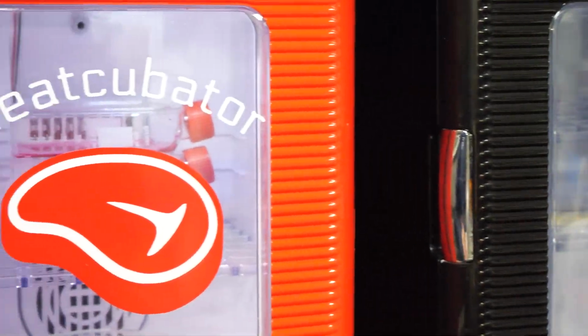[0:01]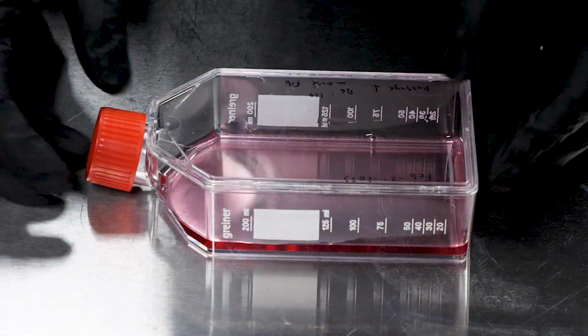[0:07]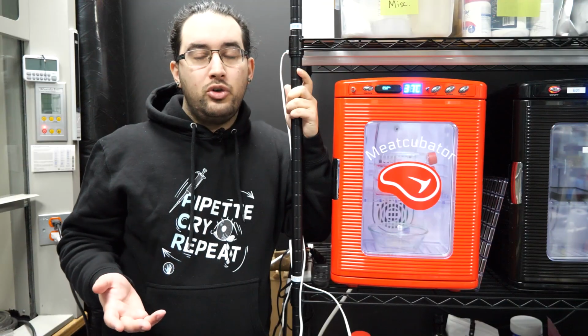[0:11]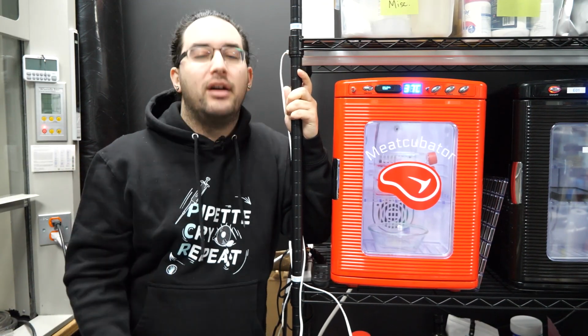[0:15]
This is my new meatcubator, and it can grow living flesh. As a test, today we're going to be growing some mouse meat, but I'm getting ahead of myself. Let's start by answering what I assume are your most obvious questions. First, why? Followed by, who on earth would want such a thing?
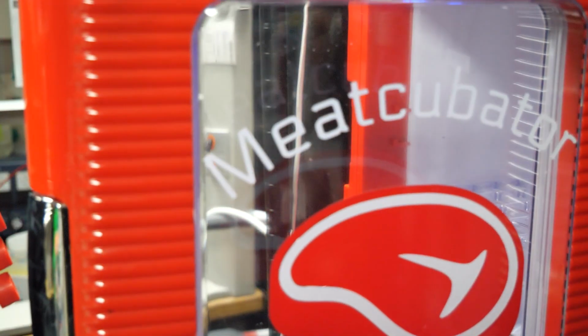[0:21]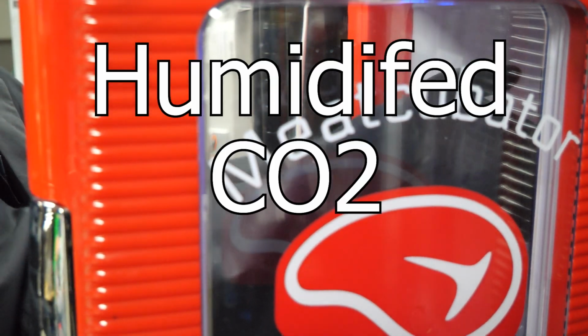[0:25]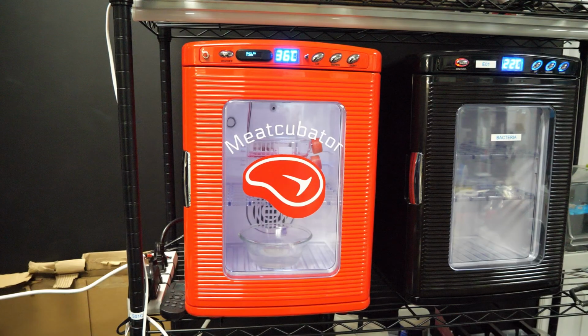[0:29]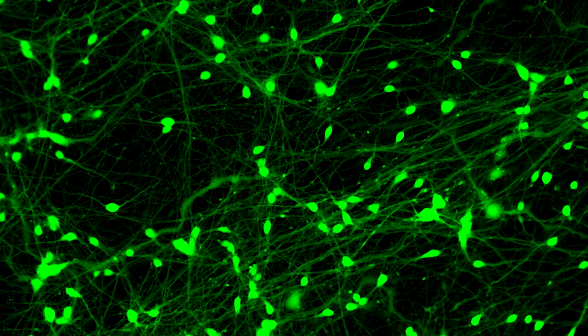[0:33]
Why is pretty simple. While we've given it an absurd name, the proper name for this is a humidified CO2 incubator, and it's used to grow most types of mammalian cells. Hence, meatcubator. And why I want it is because I've got some mammalian cells that need growing, and this is the only way to do it.
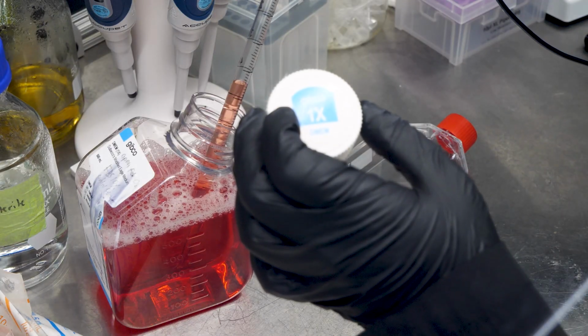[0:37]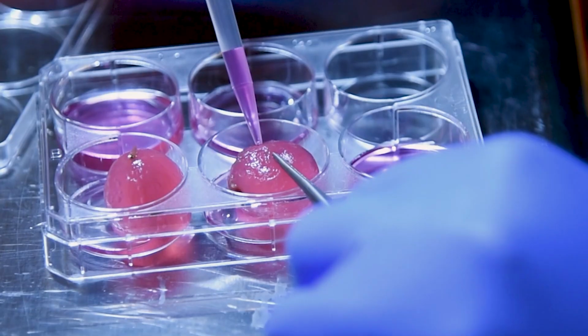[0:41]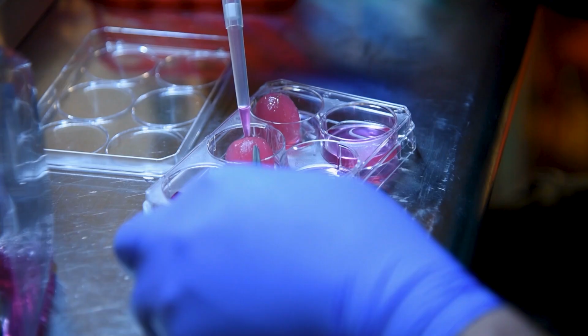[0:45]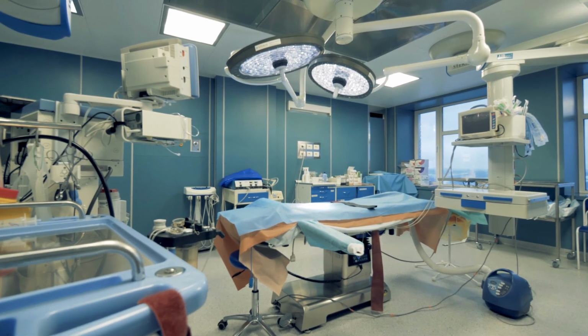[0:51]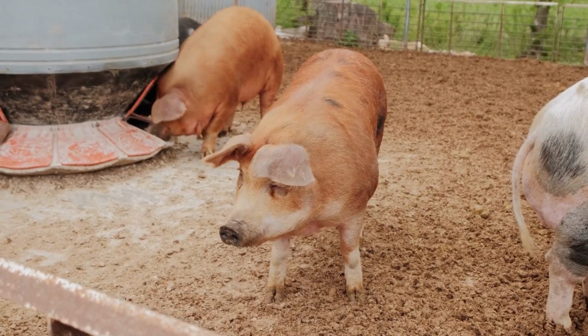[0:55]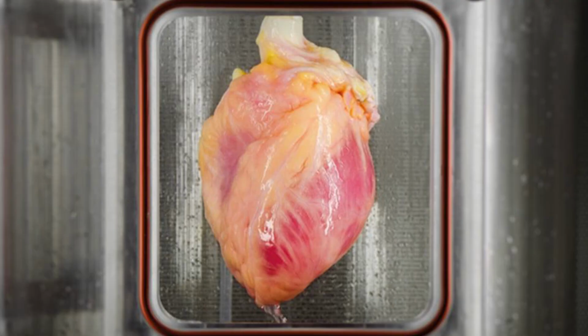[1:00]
This is not the first time we've talked about growing mammalian cells on this channel. A few years ago, you saw me make these meat berries by removing all the plant cells from a grape and replacing them with monkey cells as a way to demonstrate the cutting edge of regenerative medicine. The same technique is being used in hospitals to grow new organs for patients by removing the cells from pig organs and replacing them with patient cells so they have a perfect donor match.
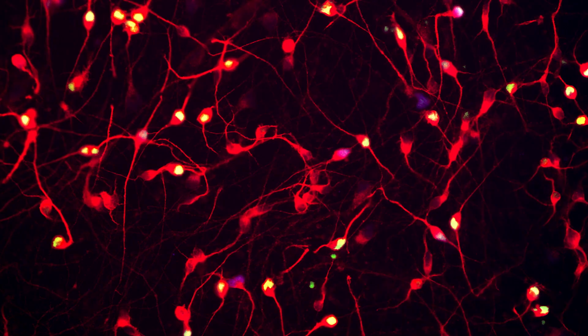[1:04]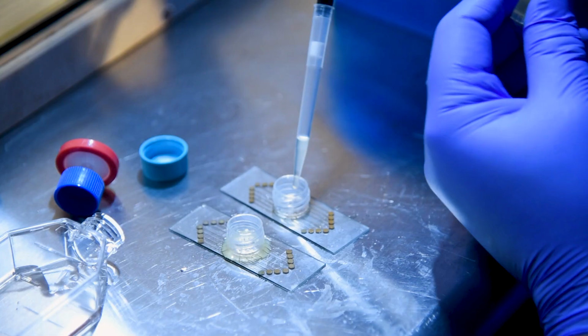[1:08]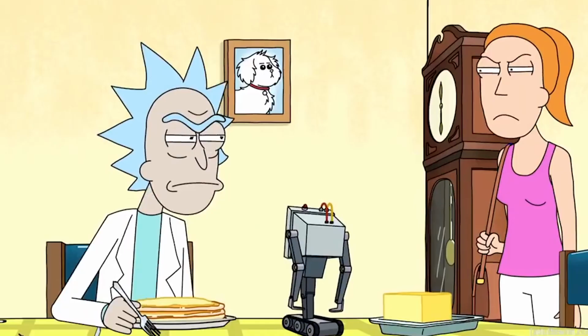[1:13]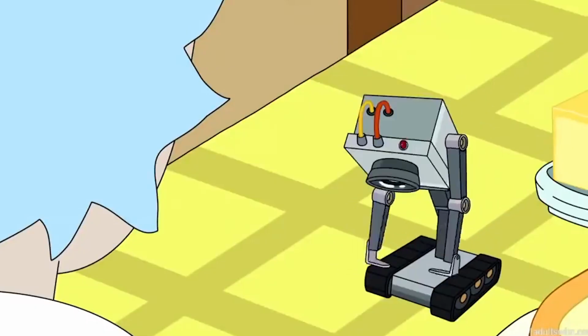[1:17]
Another project that is ongoing is the Neuron Project, where we want to grow human neurons in a special homemade electrode array and connect them up to a computer. Personally, I want to see if we can make them pass some butter, but there's a long way to go before then. What is my purpose? You pass butter. Oh my god.
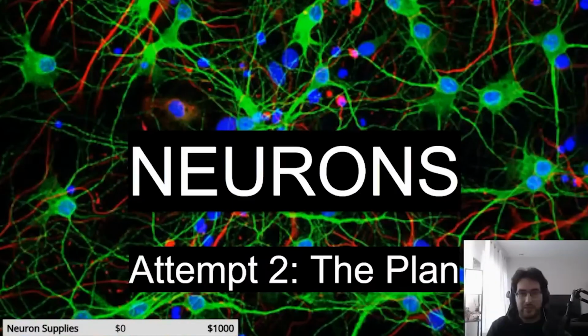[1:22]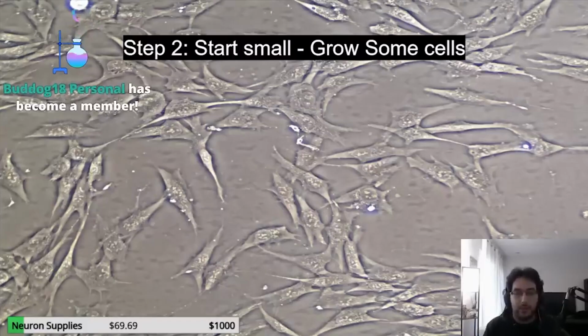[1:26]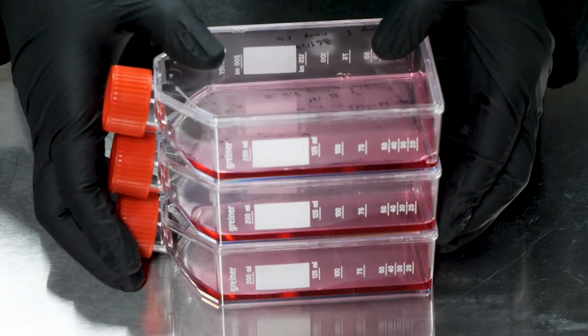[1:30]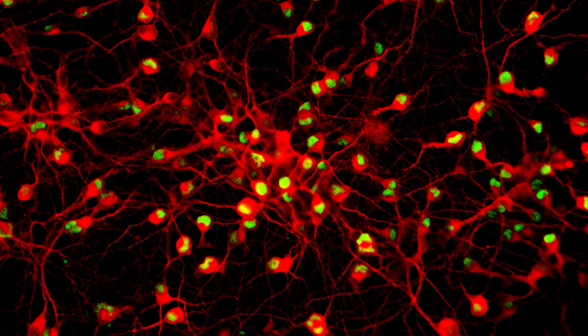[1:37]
If you saw the stream I did about the Neuron Project, you'll know that I have a new plan that breaks the project up into easier pieces, and building this incubator is step one, and growing fibroblasts to prove that it works is step two. That's the mouse meat I mentioned earlier. From there, it's just a matter of switching out the growth media, and we can try growing some neurons again, and even modifying them to be individually colored and rainbowy.
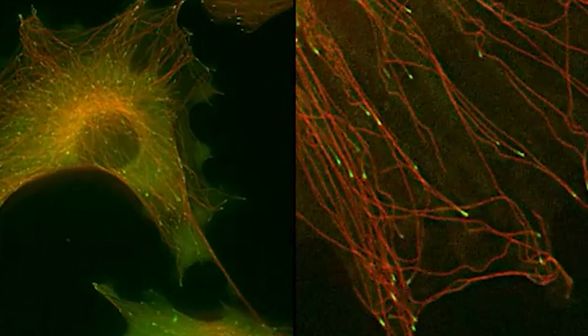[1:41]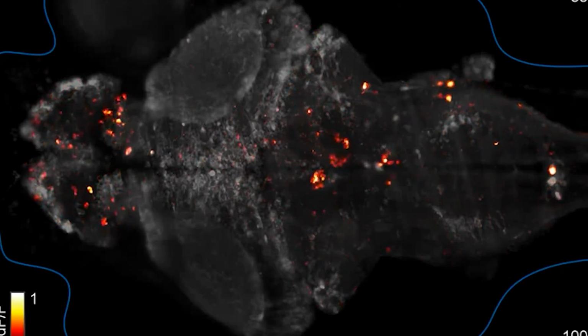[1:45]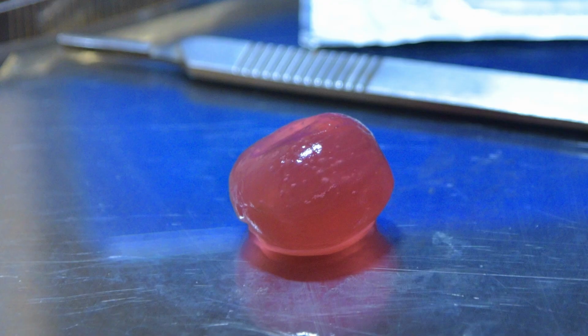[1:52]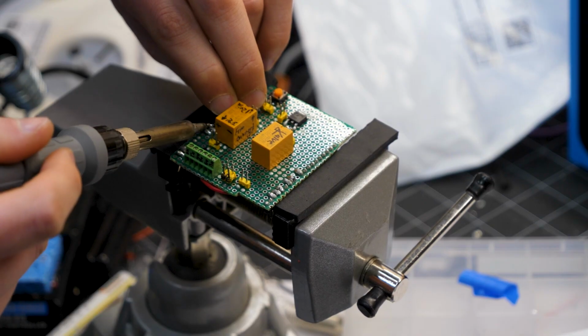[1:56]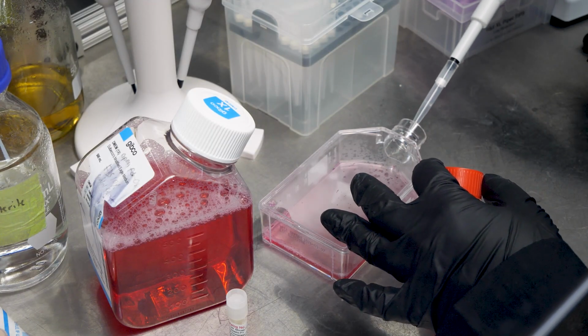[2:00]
Beyond that, there are so many amazing things you can do with mammalian cells, and now I'll be able to show off some truly cutting-edge genetic engineering, and also make some unspeakable horrors beyond comprehension as well. If you thought the meat berry was weird, wait till you see what we're gonna do with a slice of bread. So today we're gonna go over how we built this, how it works, and then give it a test drive with some cells to prove it works.
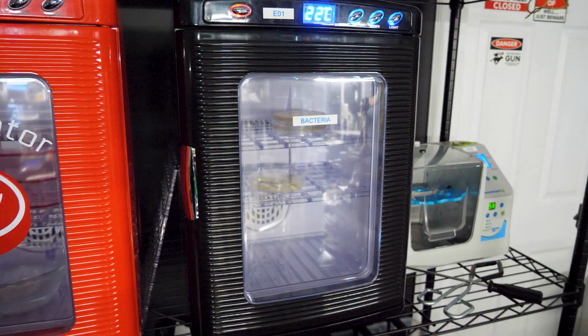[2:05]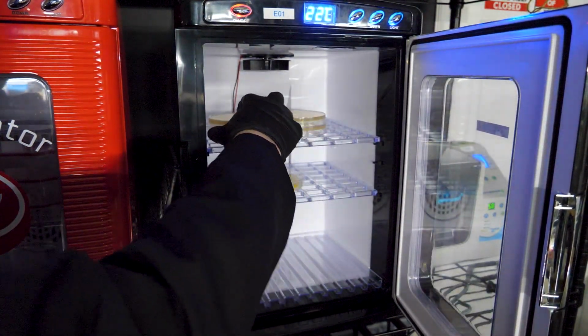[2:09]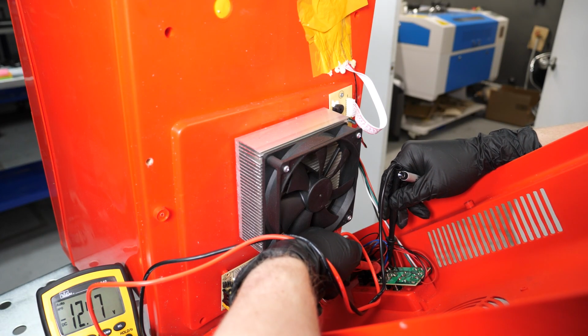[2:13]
Starting off, we bought a commercially available reptile egg incubator. I love these things, as they're a cheap and effective solution, and I already use one for my bacteria and yeast projects. This way, the heating aspect of the incubator is taken care of, and all we need to do is control the CO2 input. Doing so is really straightforward.
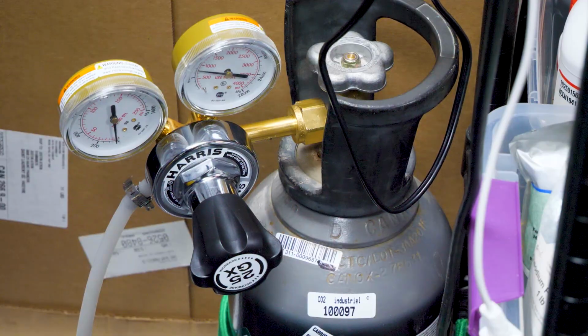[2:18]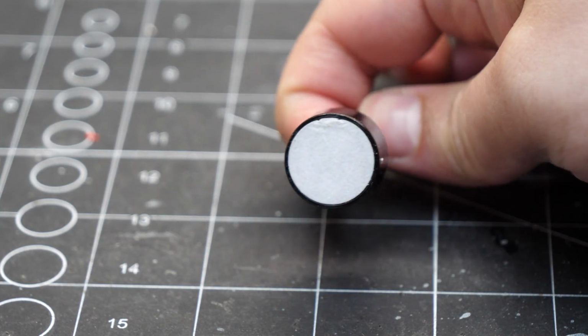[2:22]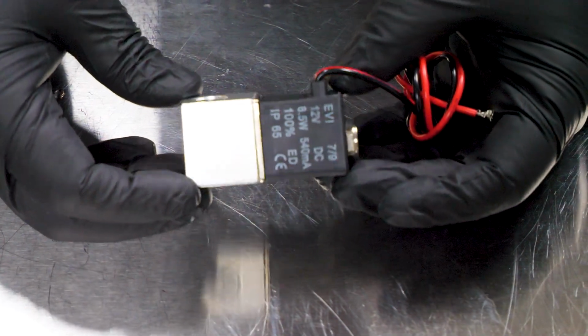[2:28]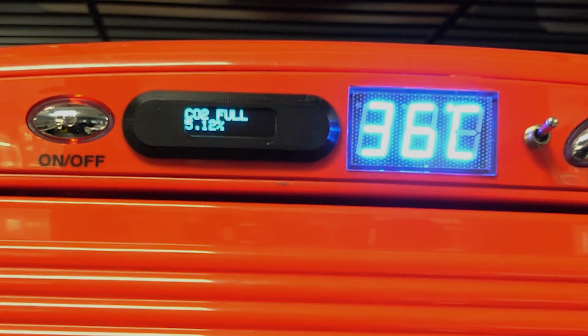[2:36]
To control the flow of CO2 from a normal gas tank, the system first uses an infrared CO2 sensor to detect the level of CO2, and an Arduino is used to read that sensor and then control a solenoid valve to send puffs of CO2 into the incubator. It does this on a cycle and slowly raises the CO2 level to about 5%, which is what's needed for mammalian cells. We also included a little switch on the door that'll turn the CO2 system off if it isn't closed properly, so we're not slowly filling the entire room with CO2.
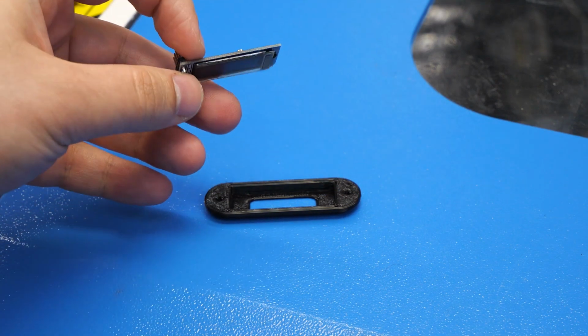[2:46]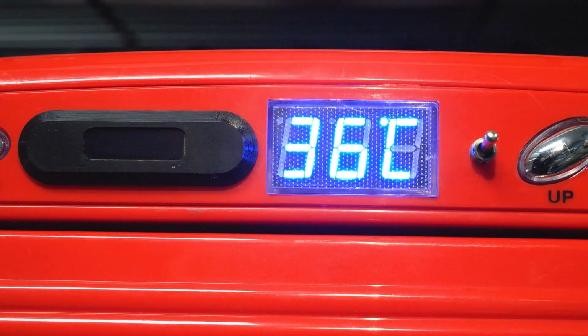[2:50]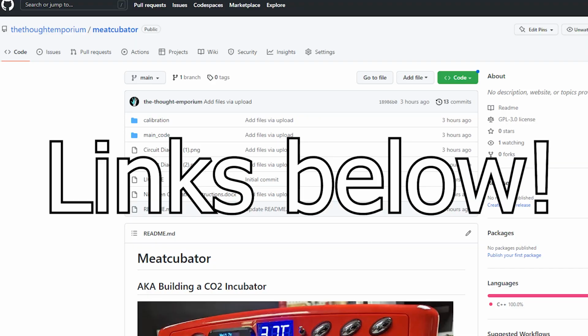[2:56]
In order to see what the system is doing, we also added a little LCD screen. And finally, there's a little switch to turn this part of the system on or off in case we want to grow cells in media that doesn't require CO2. For those that want to follow along, there's a link in the description to our GitHub where you can find schematics and code for the whole project.
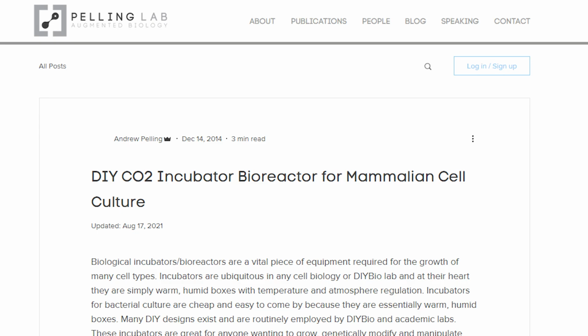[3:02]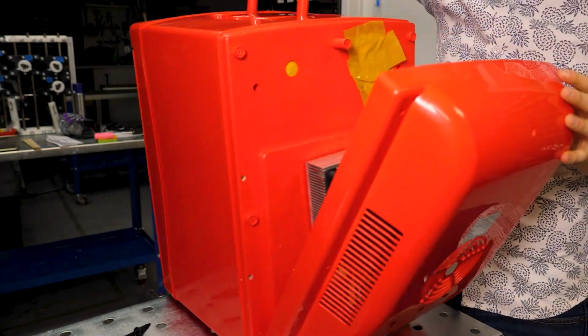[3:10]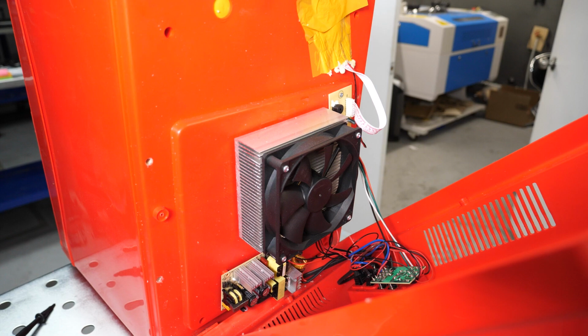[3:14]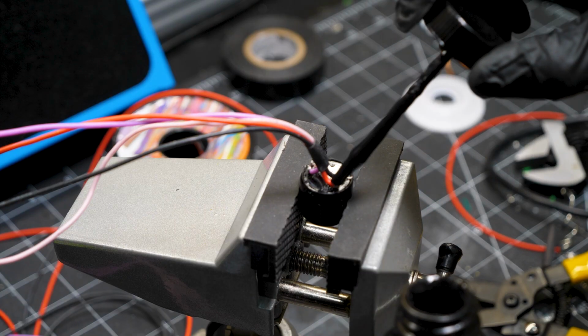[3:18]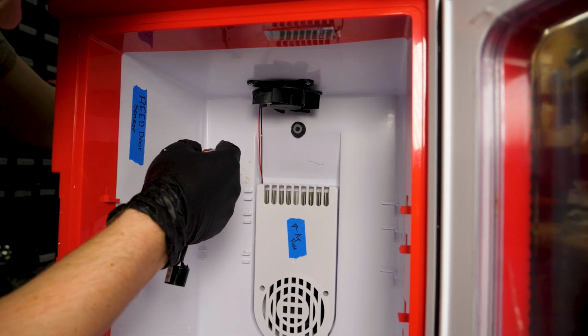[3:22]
We based our design on this tutorial from Andrew Pelling at the University of Ottawa, but had to make a few changes since their code was out of date and we used a few different components. To actually assemble all this, we started by taking the back off the incubator and were pleased to find that there's a lot of room in there to fit all the different components. After attaching some long wires to the sensor, we drilled out a hole to the main chamber for it to fit, and then ran wires through to the back.
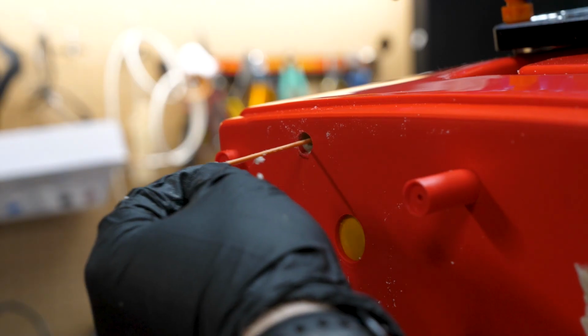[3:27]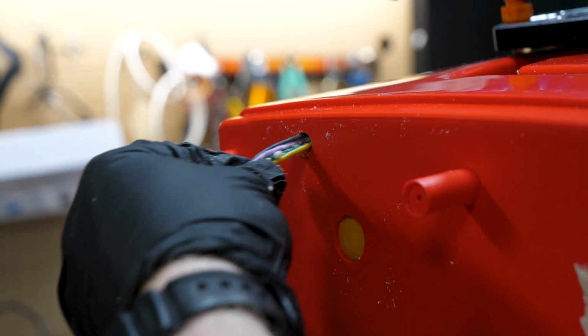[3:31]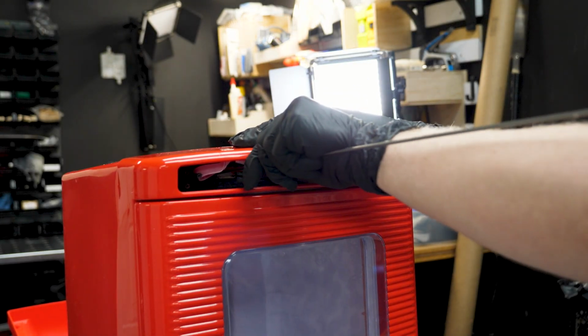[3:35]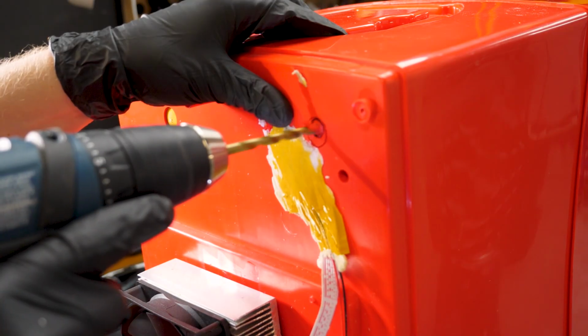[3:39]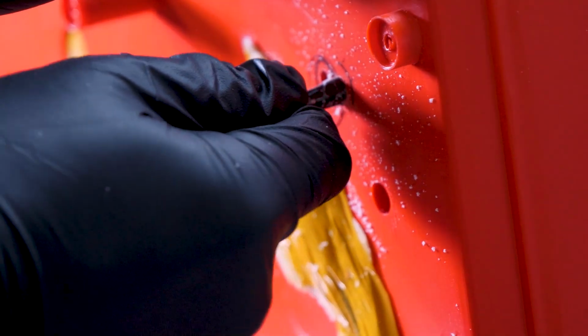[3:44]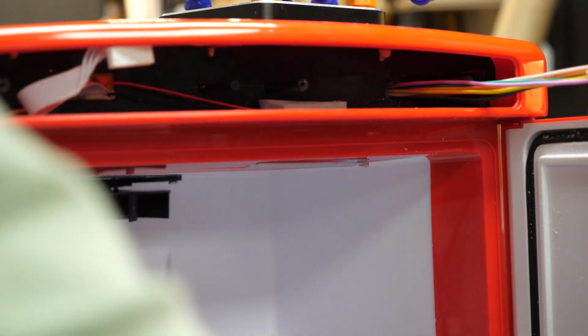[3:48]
We also drilled a hole for the CO2 inlet tube. Since the incubator is insulated with a lot of spray foam, when we needed to run wires from the front to the back, we could just drill a small hole on one side, then drive a metal rod through the foam to the back. We then located the rod using a magnet and drilled a second hole for it to come out of. We taped some string to the rod so that after it was pushed all the way through, we had an attachment point for wires so they could be pulled through as well later.
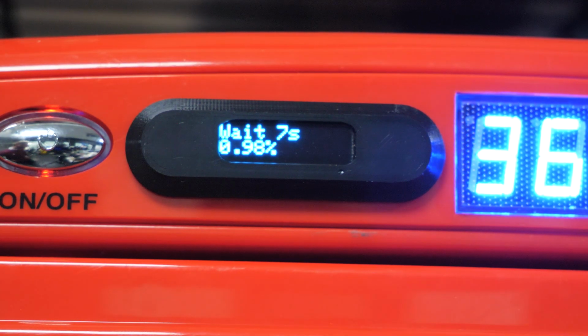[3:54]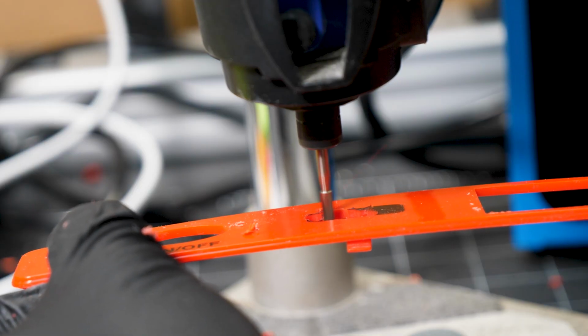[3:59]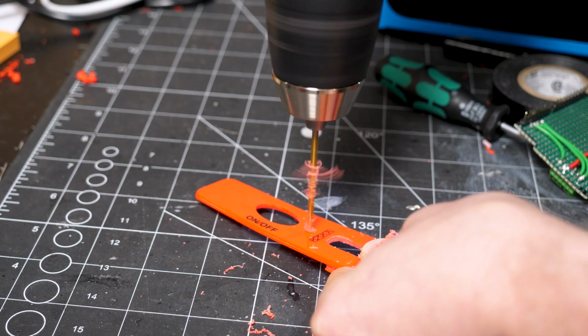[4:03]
We ended up pulling two bundles of wires through. One big one for all the different switches and LCD, and then one set for the door detection switch. To fit the LCD onto the front cover, we popped the front panel cover off and then used a Dremel to mill a slot. We also drilled a hole for the power switch.
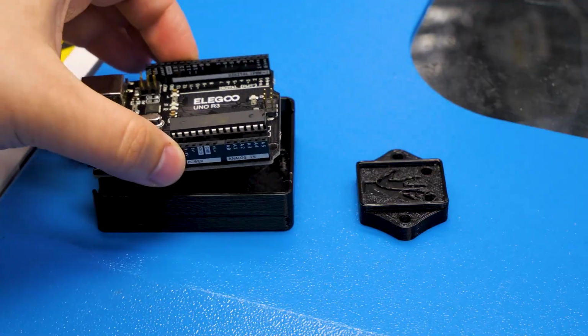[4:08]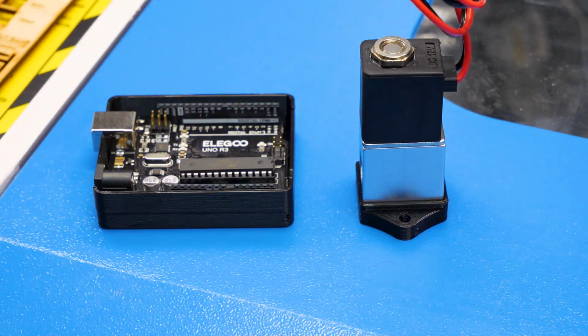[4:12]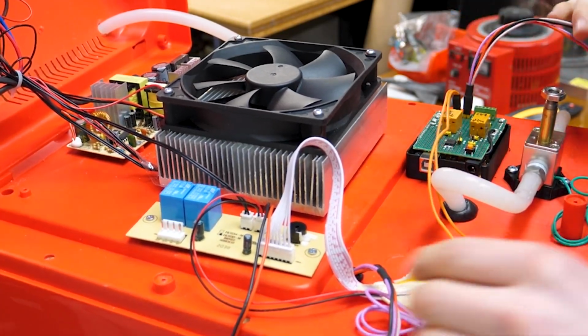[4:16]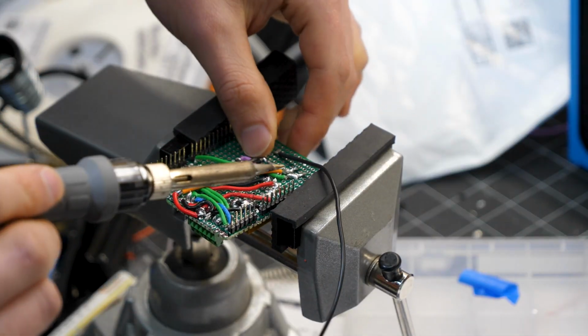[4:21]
For the Arduino, and also for the solenoid, we 3D printed a custom box and a custom mount to make it easy to mount them to the back cavity using just a couple screws. With the main electronics mounted and wires run, things could just be plugged in, and the tubing connected. In terms of electronics, we had to make a custom shield to fit on the Arduino with all the different bits and bobs. The schematic, of course, is in the description.
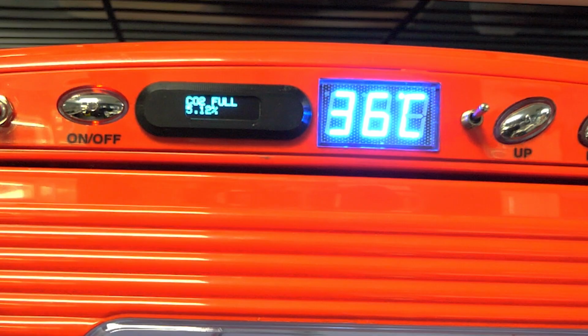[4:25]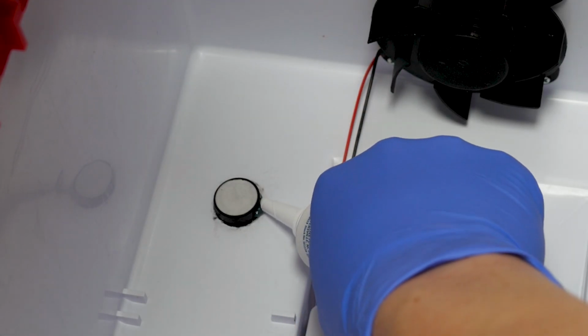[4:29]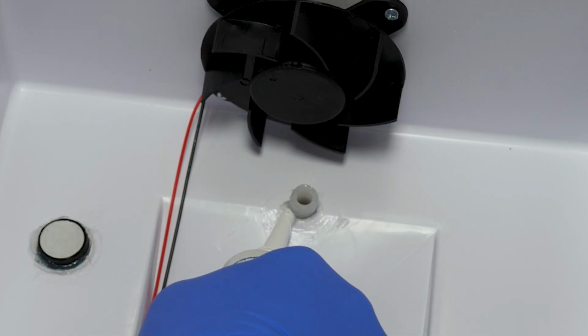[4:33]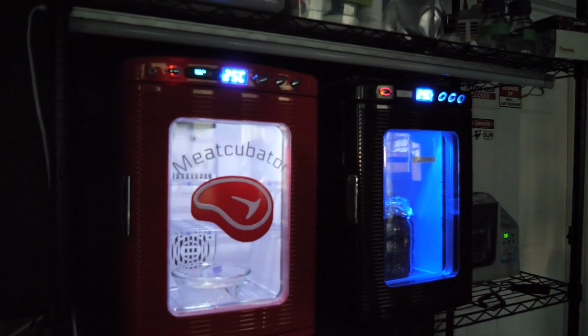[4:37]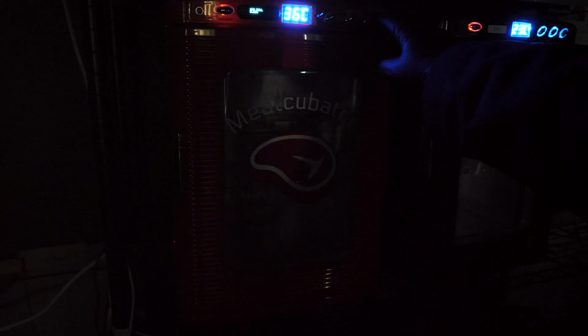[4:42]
Since the point of the incubator is to maintain a specific CO2 concentration, we want to minimize leaks, both so we aren't wasting CO2 and so normal air can't get in. So anything that was in the main chamber of the incubator was sealed in with marine silicone. The only other thing we changed was the color of the light that's built into the incubator by default. Normally it's blue, but we subbed it out for some white LEDs.
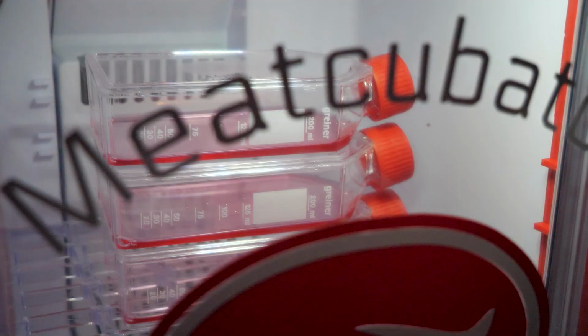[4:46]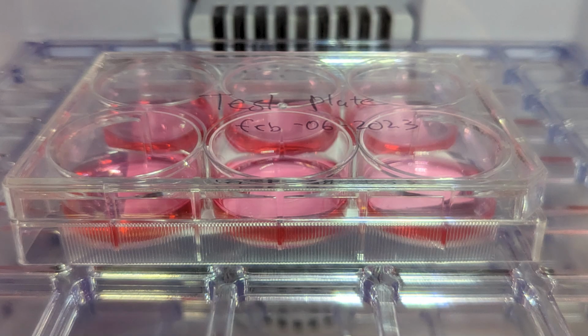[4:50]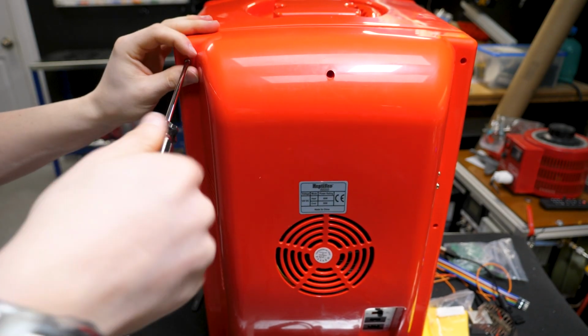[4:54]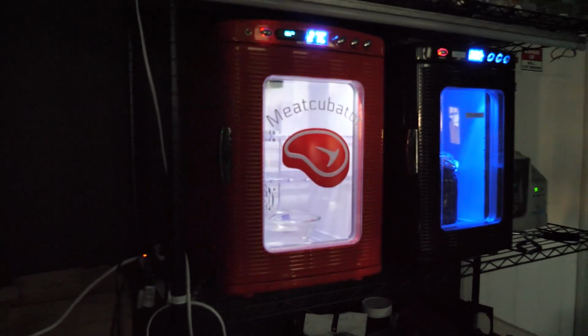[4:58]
Since most mammalian media has a color indicator in it so you can see if there's a problem at a glance, it's really important to be able to see that color accurately. But with that, the whole thing can be closed up, and all that's needed was a nice vinyl decal to make it complete. Alright, enough messing around.
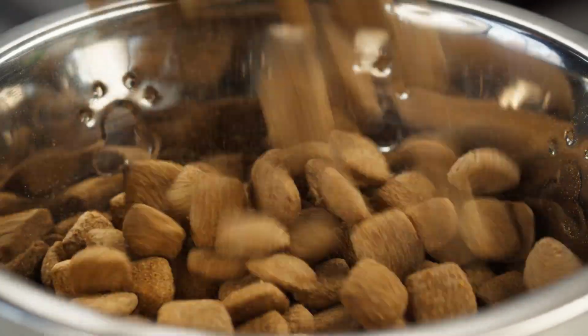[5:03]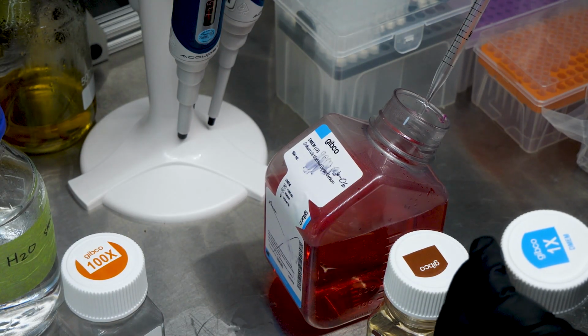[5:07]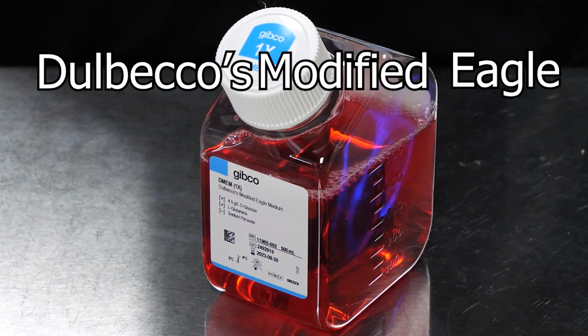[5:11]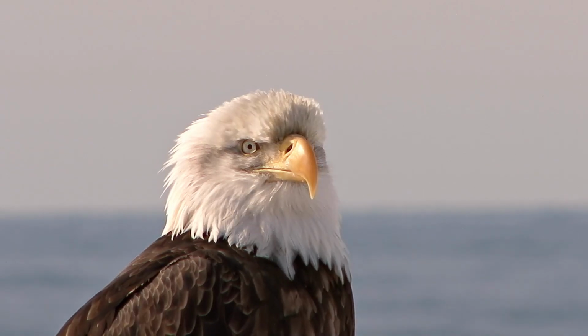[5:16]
It's mouse meat time. Like pretty much anything you want to grow, mouse cells need food, and that comes in the form of a special culture media. The media we're going to be using is called DMEM, or Dulbecco's Modified Eagle Medium, which, as I've said before, disappointingly doesn't contain eagles. But it does contain almost everything else that a growing cell needs.
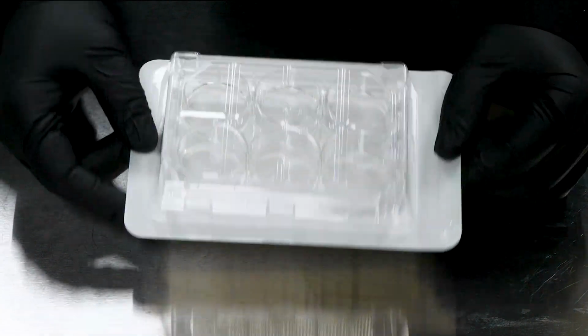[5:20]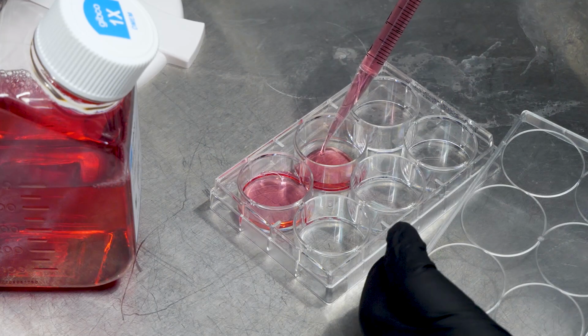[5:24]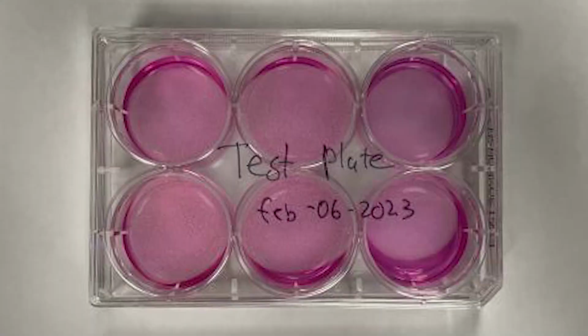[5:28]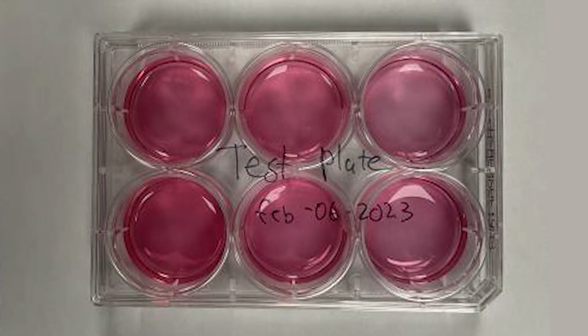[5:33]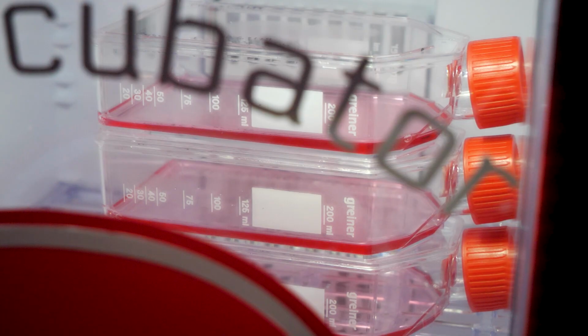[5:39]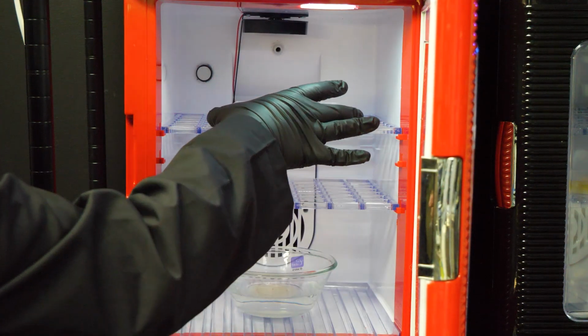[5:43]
As a quick test of the incubator, just to make sure that everything's working, we loaded some plain DMEM into a 6-well plate, and then stuck that in the incubator and let it come up to 5%. Here's what the plate looks like before it goes in, and here it is after it's been in the incubator for a while. The color change is kind of subtle, but it is distinct, and as someone that's done a lot of mammalian culture, you learn to recognize this beautiful red-orange color as the color of happy media. So the incubator is working properly. Now for the real deal.
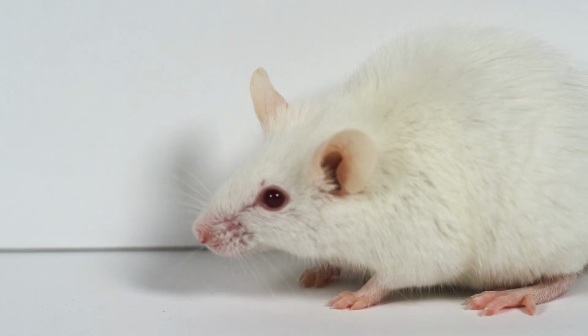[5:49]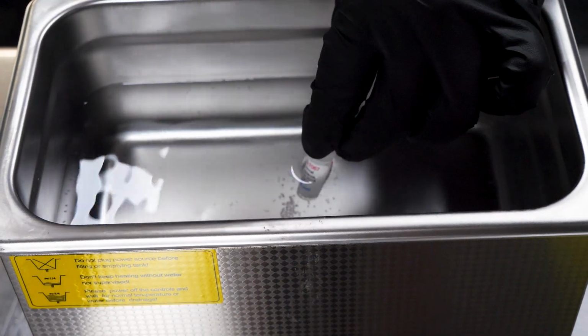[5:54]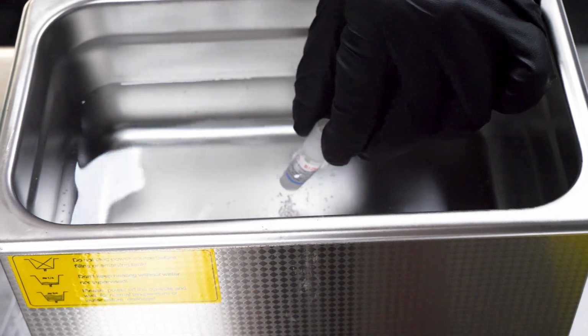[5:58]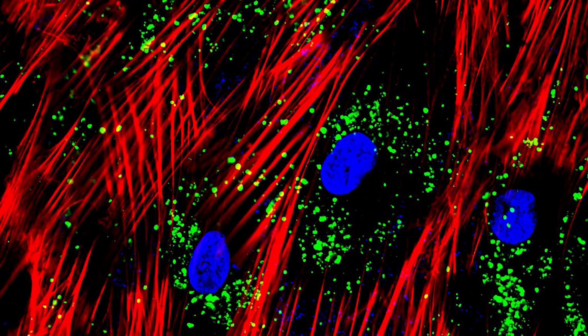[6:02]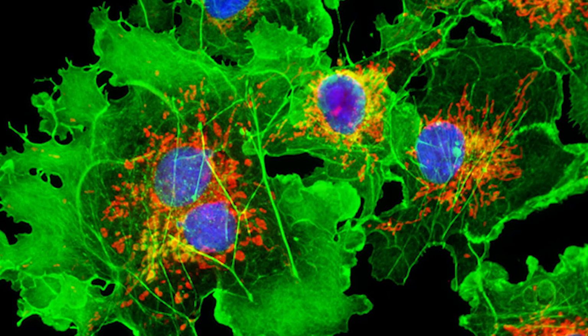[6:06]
The cells we'll be growing are a primary cell line derived from adult mouse skin, specifically fibroblasts. We chose these because they grow rapidly, are non-human and unlikely to contain any pathogens, and don't require anything particularly weird or expensive to grow. They're also very easy to genetically modify, so are a great platform for testing various genetic constructs. Also, as cell lines go, they're pretty cheap because of how easy they are to grow and maintain.
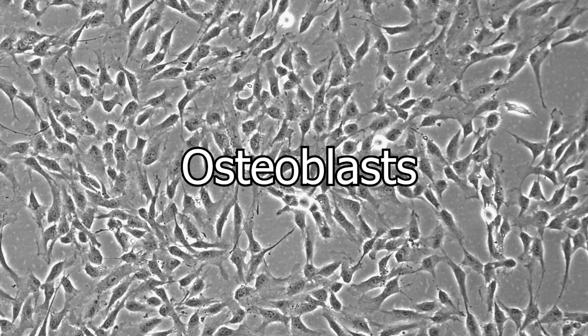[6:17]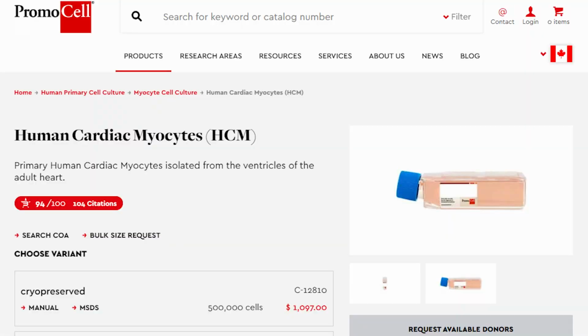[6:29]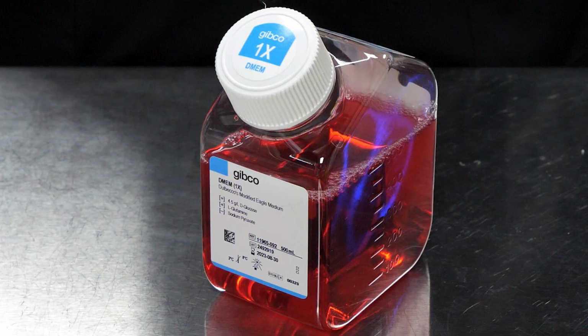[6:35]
Something weirder, like, say, hepatocytes from a liver or osteoblasts from bones, often require very expensive media because they need lots of extra growth factors to grow properly. So it drives the price up both because of the initial cell line and the media to grow them. The human cardiac muscle cells that I'm going to be growing in a future video are nearly double the price, just as an example. As a growth medium, plain DMEM isn't actually quite enough, and so there's a few other things we're going to need to add to it for the fibroblast to be happy.
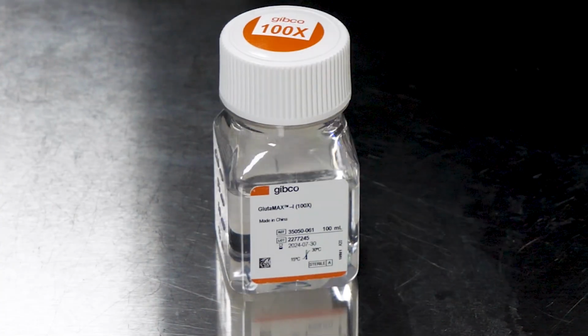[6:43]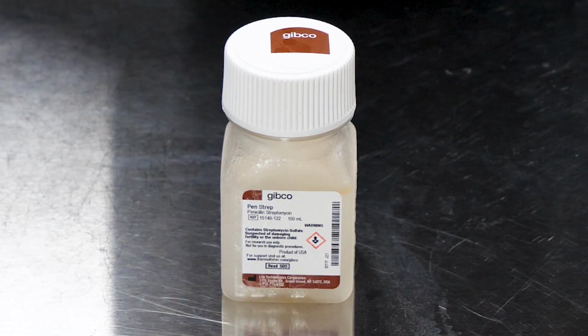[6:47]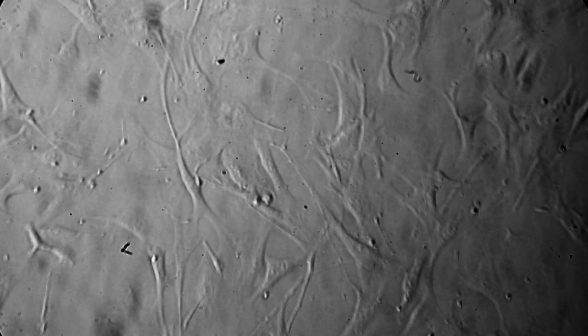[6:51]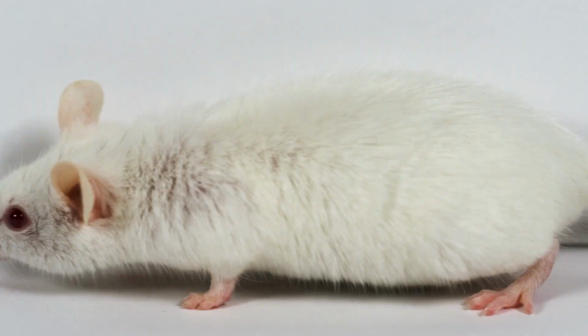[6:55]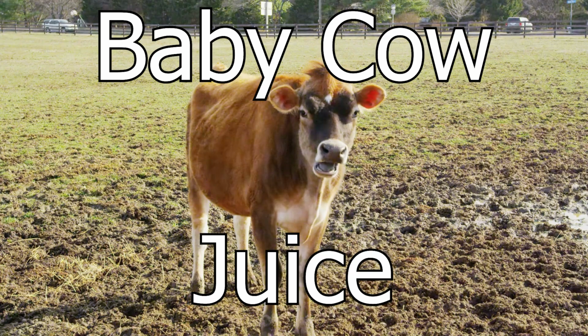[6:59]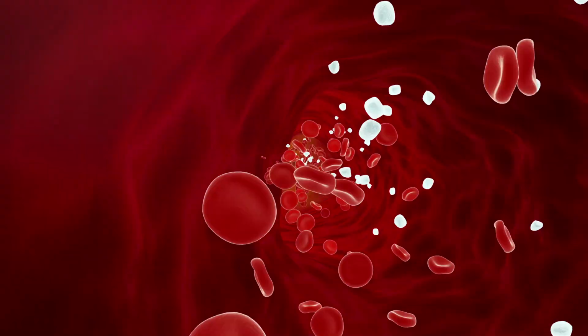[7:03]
First is a supplement called Glutamax. Then we need some pen strep, which is a mix of antibiotics to help make sure the culture stays clean, since pure fibroblasts don't have an immune system to fight off bacteria the way, say, a whole mouse does. Finally, we need some fetal bovine serum, or as I like to call it, baby cow juice, since it contains dozens of growth factors that trick the cells into thinking they're still inside an animal, and so will grow readily.
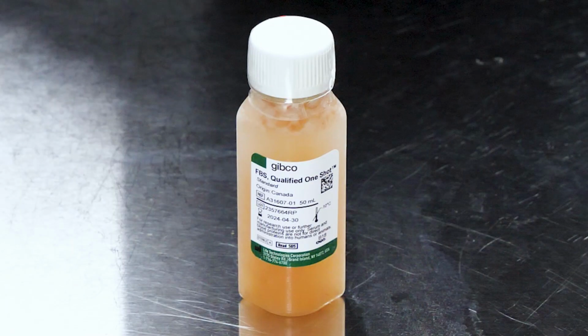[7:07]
I don't love using this stuff for, I feel like, obvious reasons, so in the future, now that we have this working, we'll be able to explore some less cruel alternatives. But for now, fetal bovine serum is the industry standard, so it's what we're going to use.
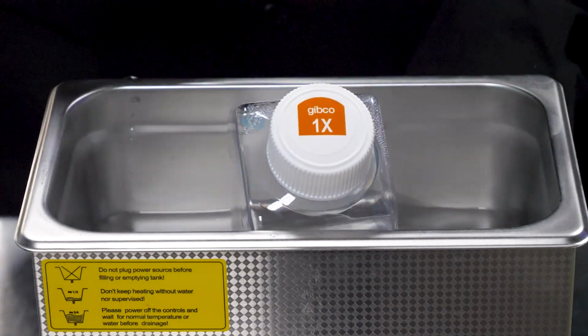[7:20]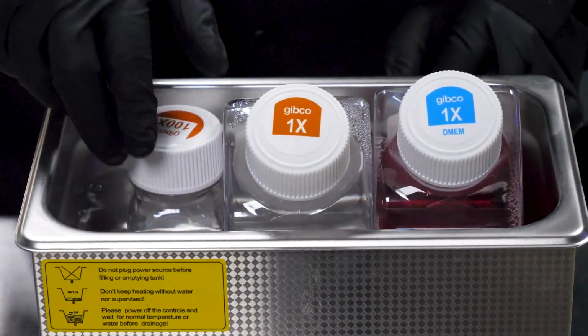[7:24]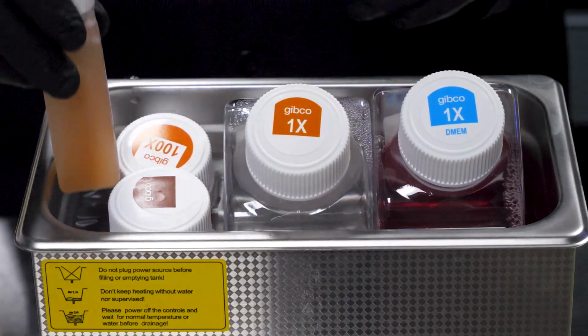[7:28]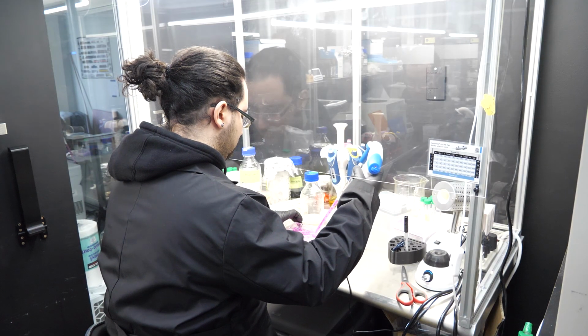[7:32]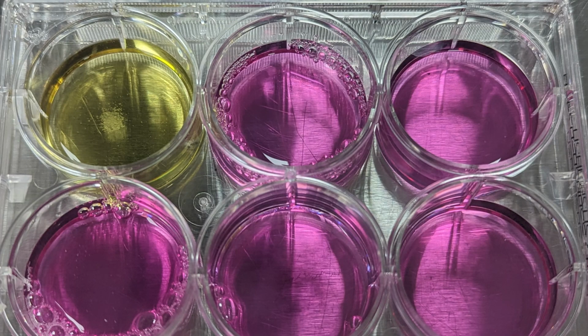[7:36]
Before any of these can be used, they need to first be thawed and then warmed to 37 degrees Celsius. So we set up a hot water bath and let everything melt and warm up. While that's warming up, we can prep our workspace. I'll be working in my laminar flow hood today to make sure that everything we do is super sterile, as any contamination will ruin the culture.
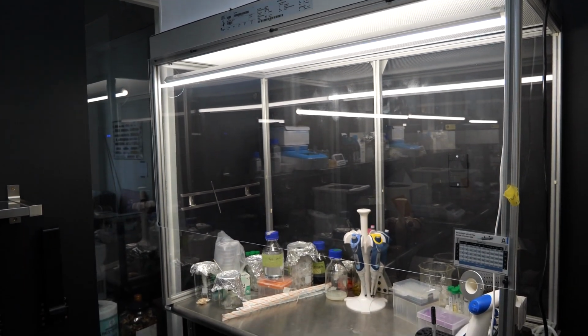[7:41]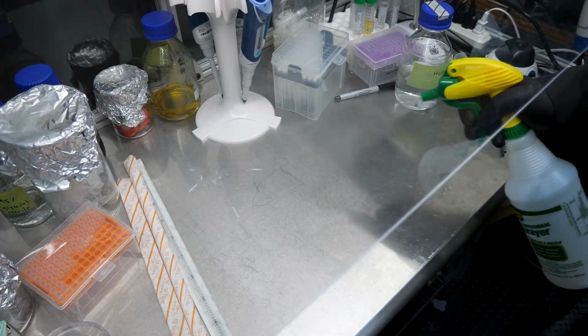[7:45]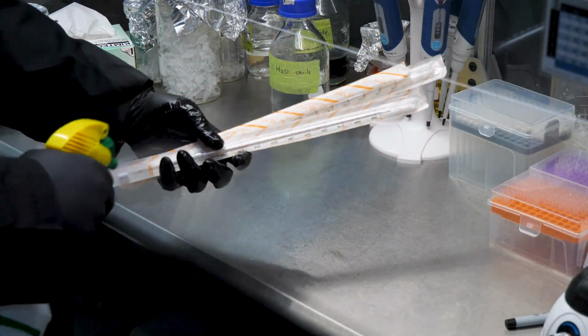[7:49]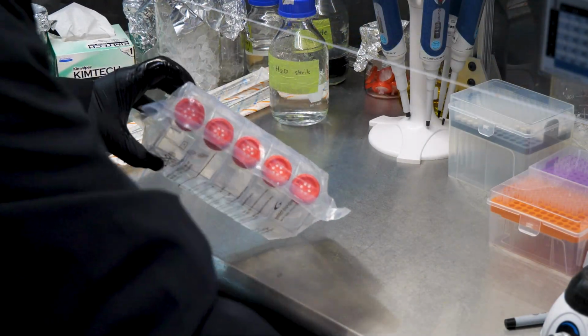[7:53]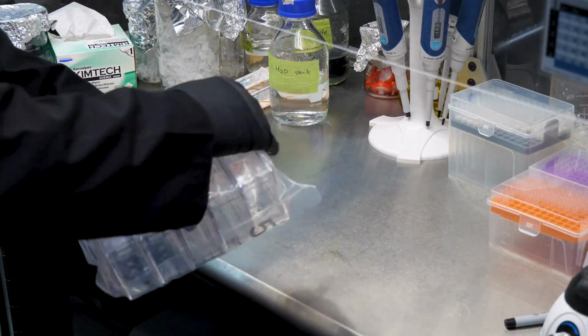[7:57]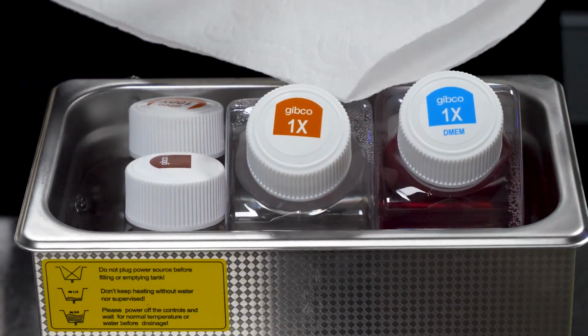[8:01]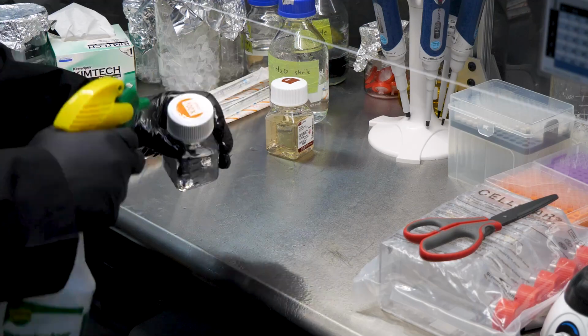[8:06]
It blows super clean air over the workspace so we can work without concern of stuff falling into the various bottles. First, everything gets sprayed down with alcohol, and then I load in some serological pipettes, spraying them down right before I do so. Then I load in a box of flasks, which we'll be using for the culture, again, spraying them down first. You're gonna see a bit of a pattern here. Everything is always sprayed down before it's loaded in. With that done and the bottles thawed, I carefully dried the various bottles off with paper towels off camera and then loaded them into the hood.
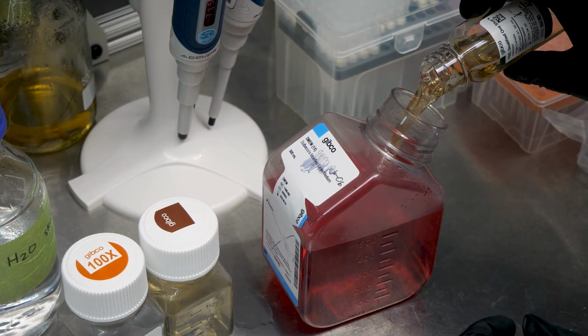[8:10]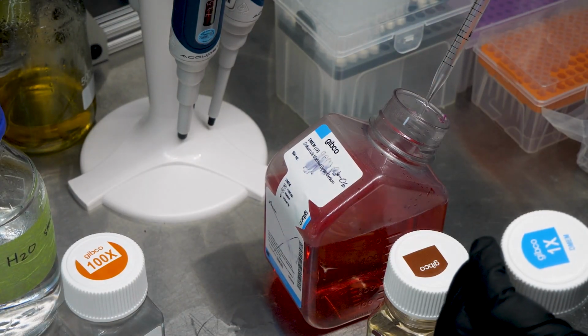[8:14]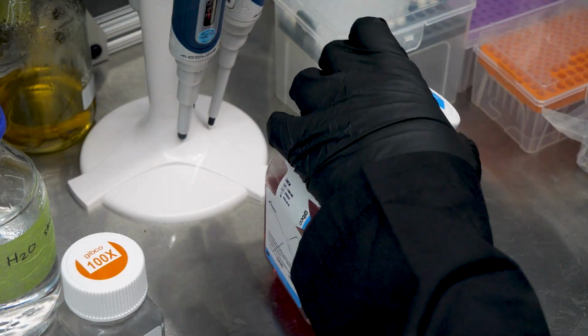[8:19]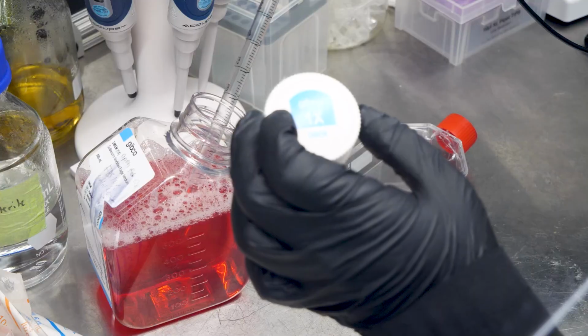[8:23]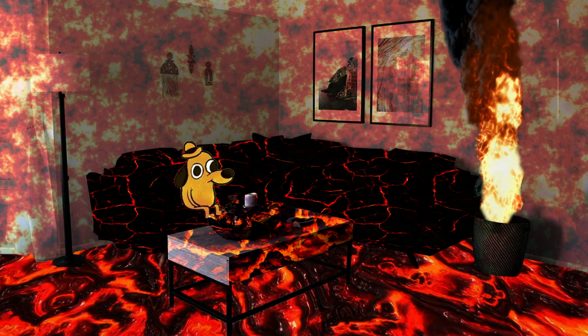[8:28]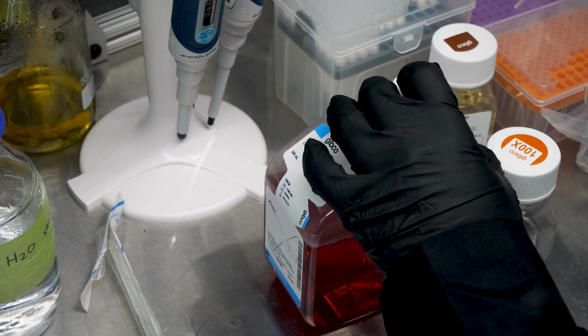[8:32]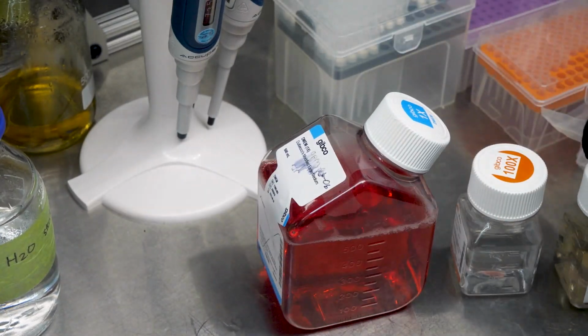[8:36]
For this witch's brew, I need to add an entire bottle of fetal bovine serum, or about 50 mils worth, then 5 milliliters of Glutamax, and 5 milliliters of pen strep. You'll notice that I am very careful not to touch anything as I do this, especially the inside of the lid. Mammalian culture is like a game of the floor is lava, but everything is lava. Touch nothing unless it is absolutely necessary. Once everything is added, the bottle of media is capped and then brought out of the flow hood and allowed to warm back up before we use it with the cells. Everything else is put away.
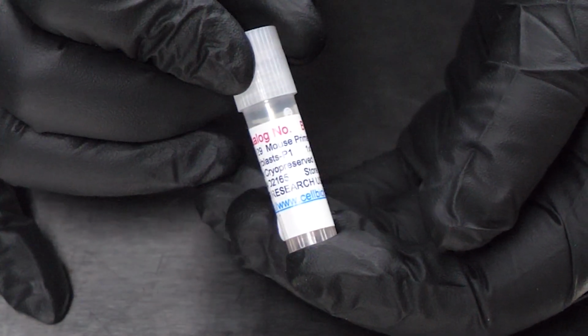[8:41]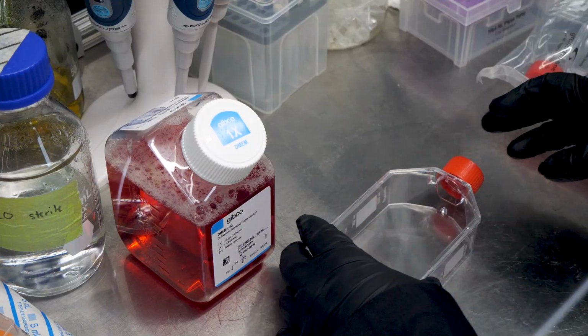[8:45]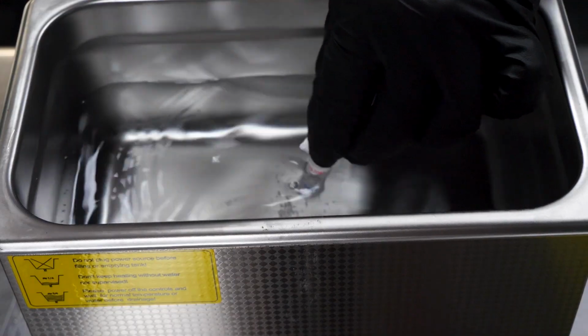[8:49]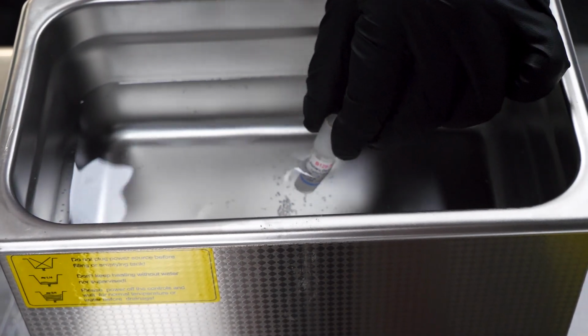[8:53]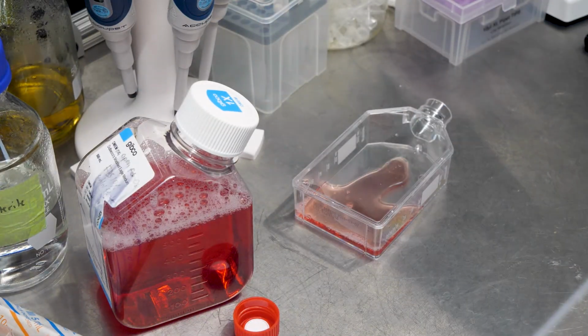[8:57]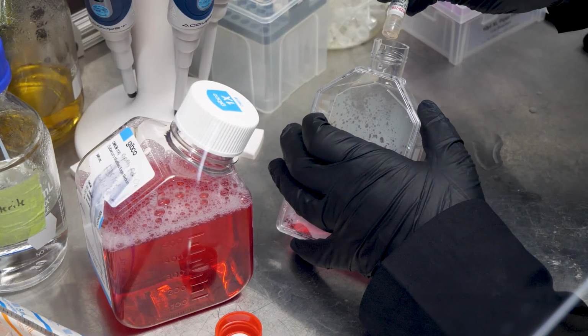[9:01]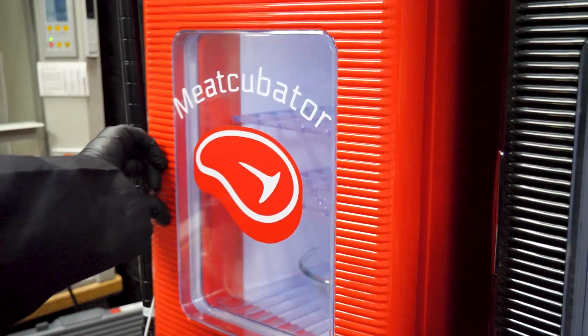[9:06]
The cells come as a frozen vial shipped on dry ice. Before I even touch them, I put the pre-warmed DMEM back in the hood. Then I rapidly thaw the cells in the water bath. It's important to thaw them quickly and get them into culture media as fast as possible. I'm using a T75 flask here, so I add 15 milliliters of media to one of them. Then, carefully dump the entire vial of cells inside. Then cap it, label it, and quickly bring it over to the meatcubator.
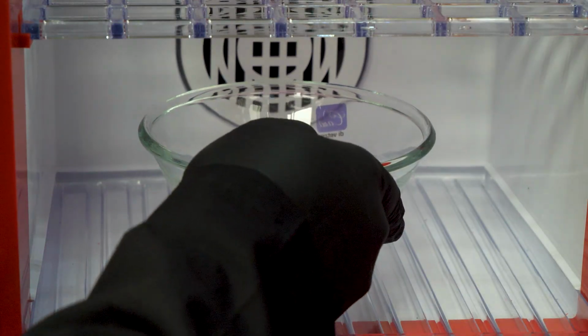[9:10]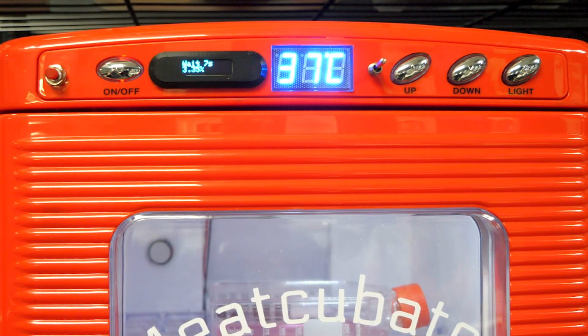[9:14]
To make sure the media doesn't evaporate, I've placed a bowl of water in the bottom of the meatcubator to keep the humidity level nice and high, and the temperature is set to 37 degrees to mimic internal body temperature. Then, the cells are just left to grow. At first, they look like round cream puffs, and they're just floating around. But over a few hours, they'll sink to the bottom of the dish and attach and then spread out to look more like gooey crystals. Over the course of a few days, the cells will grow and divide and spread through the flask.
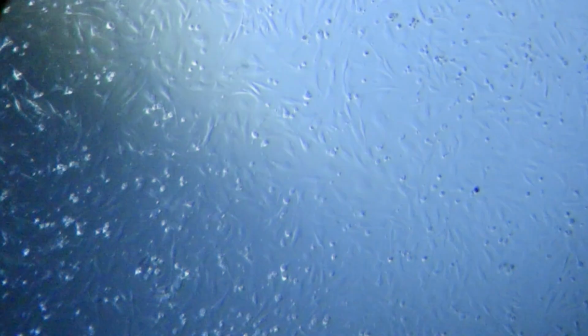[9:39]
And at some point, when they cover about 85 to 90% of the flask, they've reached what's called confluence, and it's time to split them into new flasks.
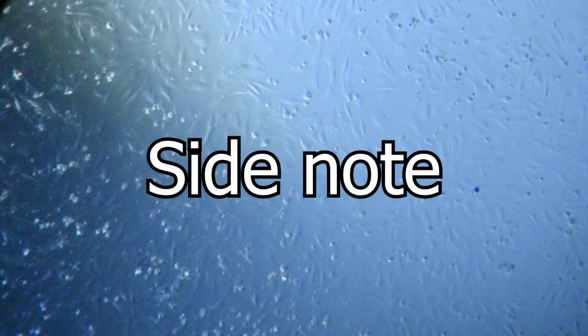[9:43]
As a side note, every time I say the word confluence, it just sounds like the sort of thing you say after somebody sneezes. You know, somebody goes like, hachoo, and you go, confluence!
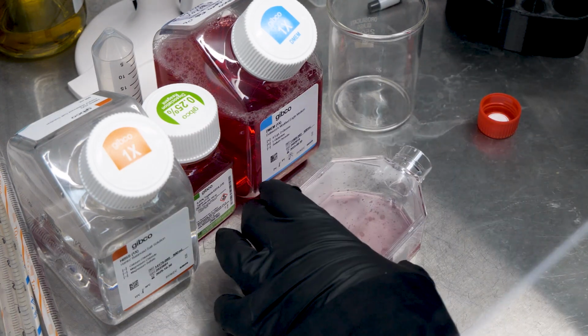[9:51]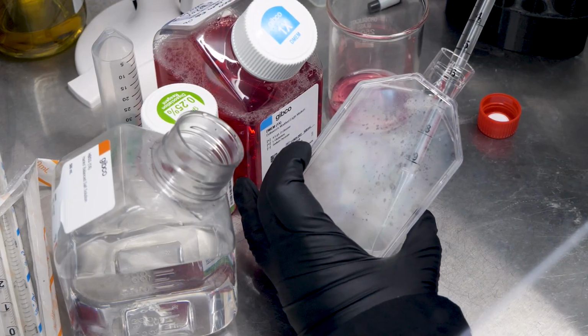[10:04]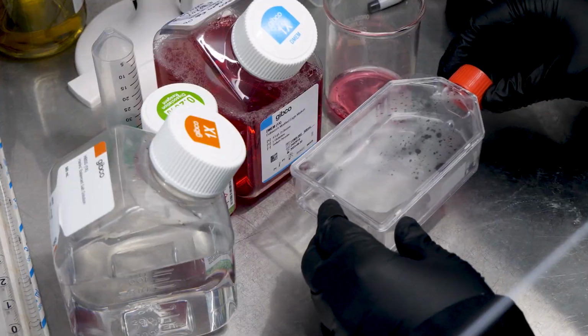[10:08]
When the cells are ready, we first remove the media and discard it. I collect the solution by tipping the flask and sucking it up from the bottom corner so as to not disturb the delicate layer of cells stuck to the bottom of the flask. Then we wash the cells with a buffered saline solution called HBSS, swishing it around gently before removing it as well.
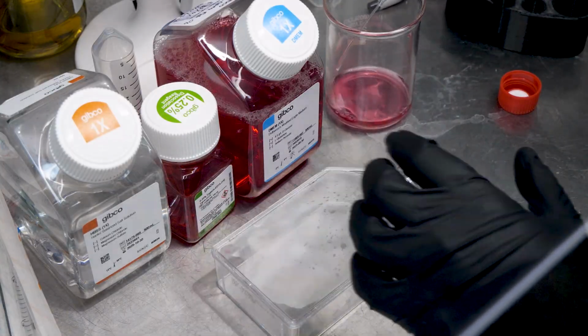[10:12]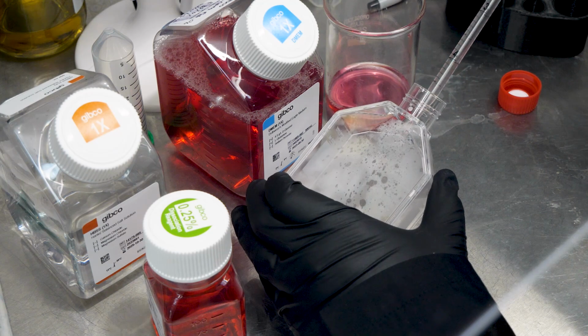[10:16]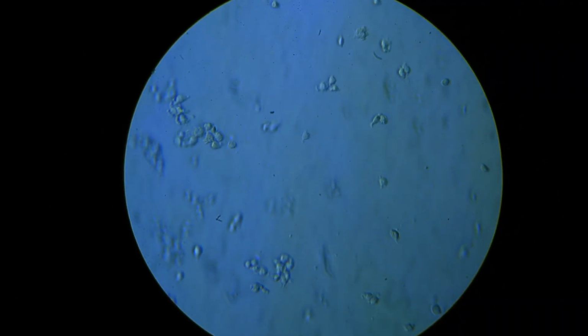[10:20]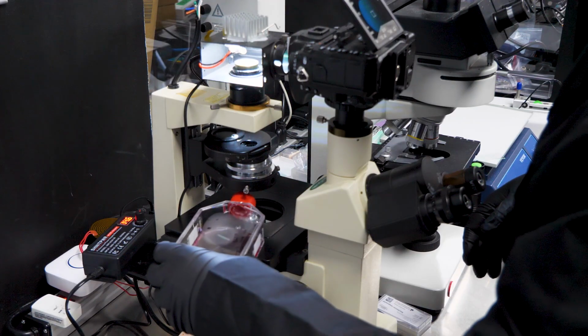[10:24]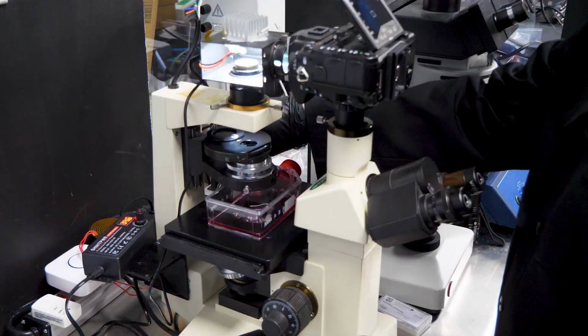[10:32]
To get the cells to release from the flask, we add a solution of trypsin, which is an enzyme that will break down the connections the cells have made to the flask, allowing them to float freely again. I like to place the flask on a shaker table to help get everything resuspended. I'll check the cells every minute or two with my inverted microscope, which, unlike a regular microscope, looks up through the bottom of the flask, so that way I can see when the cells have fully detached.
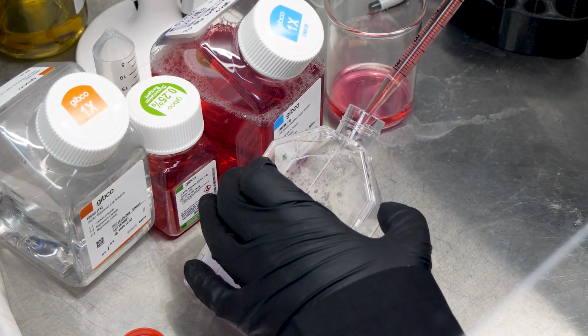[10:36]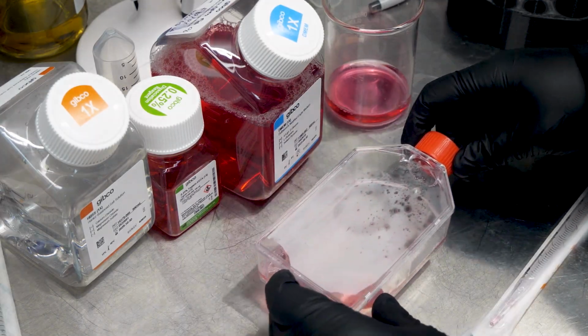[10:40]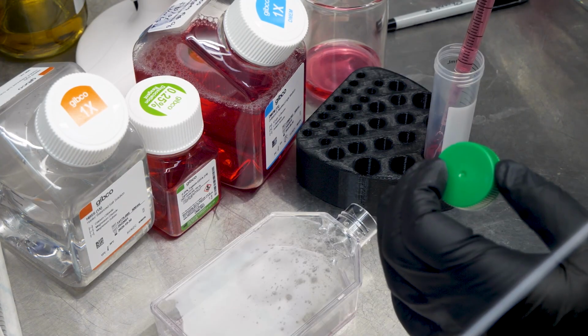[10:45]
When the cells have detached, I add 10 milliliters of fresh media to turn off the trypsin, as it will kill the cells if allowed to keep working. Once that's added, I'll gently mix the flask, then transfer the contents to a 50ml tube so that I can spin it down in a centrifuge.
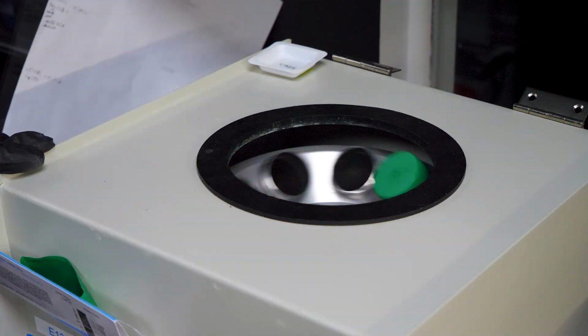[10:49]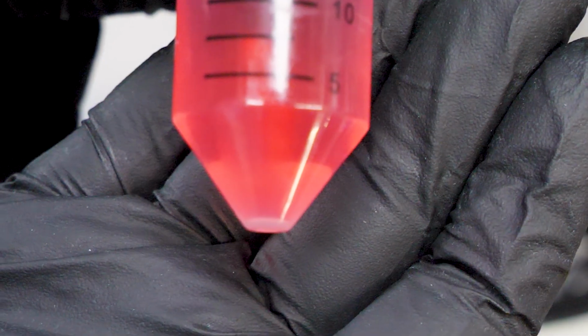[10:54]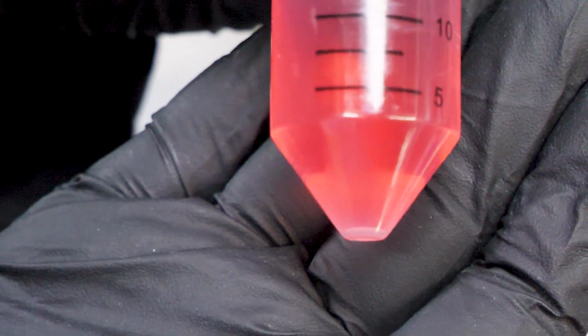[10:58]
I spin down the cells gently at low speed to collect them so that I can remove all of the liquid and replace it with fresh media that's free of trypsin. It can be hard to see, but there's a very fine pellet of cells at the bottom of the tube after spinning for a few minutes. The low speed is used so that the cells collect but aren't popped by the high Gs.
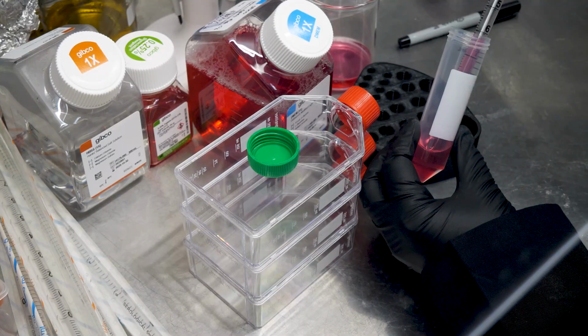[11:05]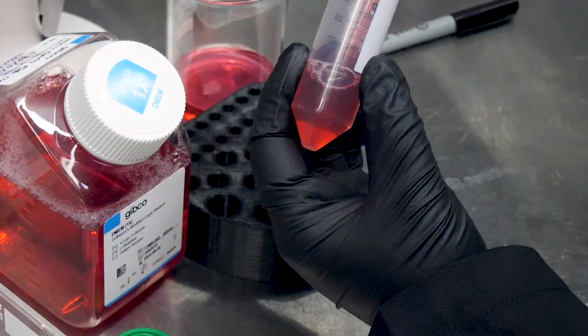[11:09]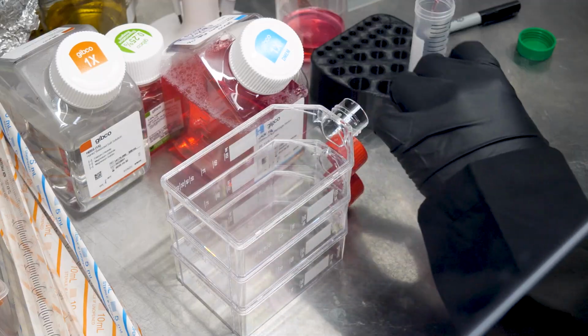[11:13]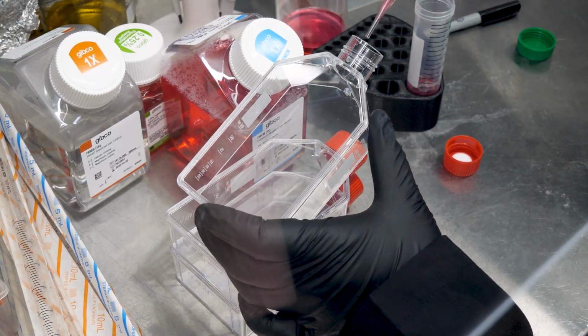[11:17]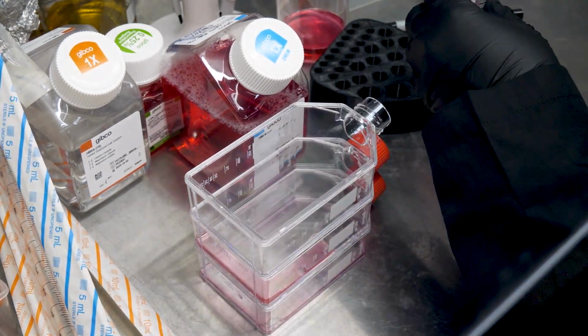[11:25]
I'll then carefully remove the liquid without disturbing the pellet and then add 15 milliliters of fresh media. Then, gently resuspend the cells by pipetting up and down a few times. I'll have to add 5 milliliters of this suspension to each of 3 new flasks, but I started with just one so that I could have a quick look in the microscope to make sure the cells have been suspended properly. With that verified, I added 5 milliliters to each of the other 2 flasks.
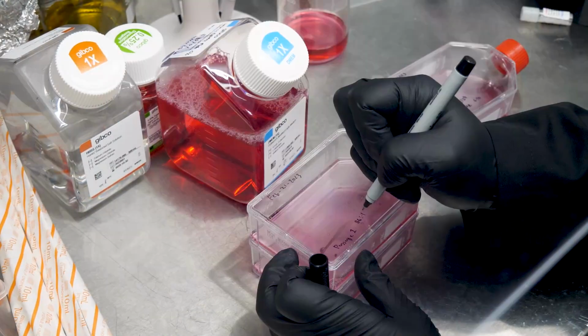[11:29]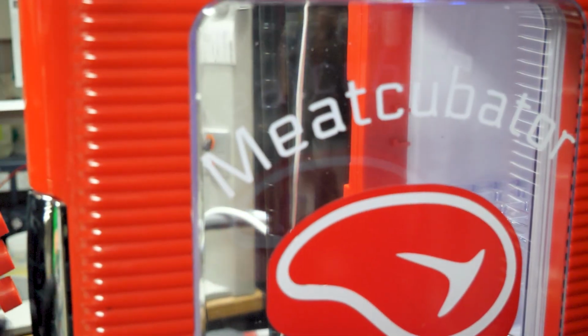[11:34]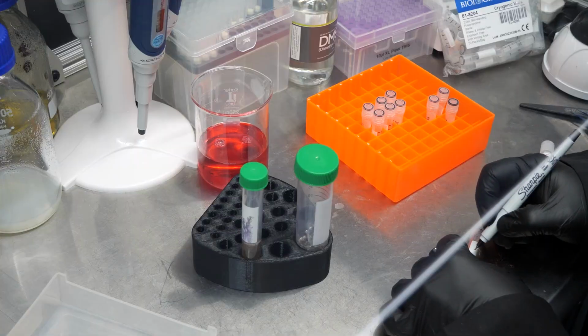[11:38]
Then, all 3 are topped up with 10 milliliters of fresh media, and the whole stack can be put into the meatcubator to grow. And now the cycle is complete. Once these have grown, I'll do the same process again, but the cells from 2 of the flasks will be frozen to keep them ready for future use, while 1 flask I'll keep alive for immediate experiments.
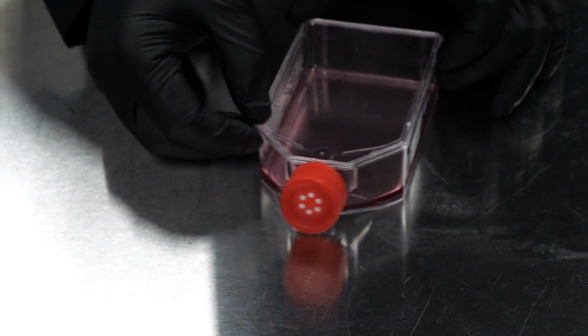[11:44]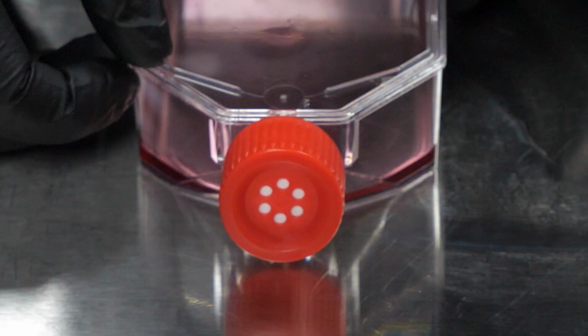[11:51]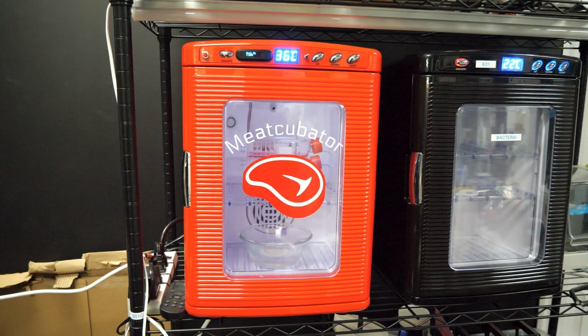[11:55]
A quick final note for those wondering, the way that the CO2 and air mix actually gets into the flask is through the lid. There's a special filter that lets gases exchange while also letting you handle it without it getting contaminated. But that's pretty much it. The meatcubator works, I've got a freezer full of mouse meat, the cells are happy, and we're now ready to embark on a whole new journey of amazing projects.
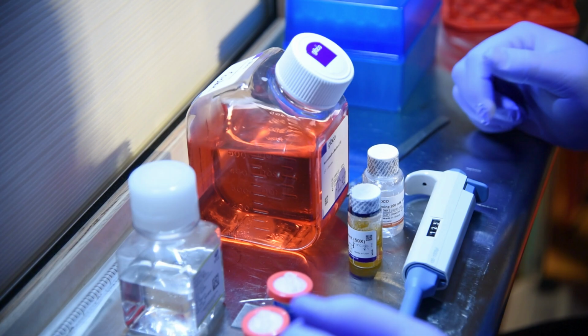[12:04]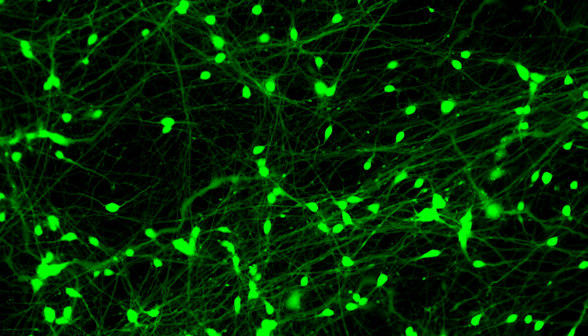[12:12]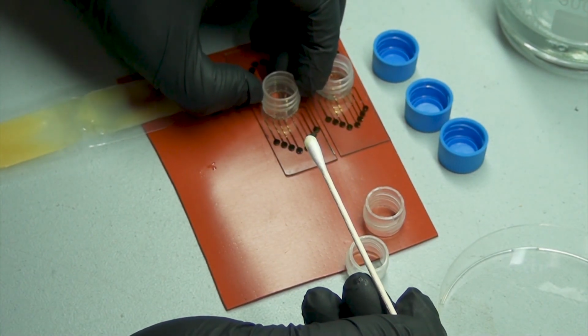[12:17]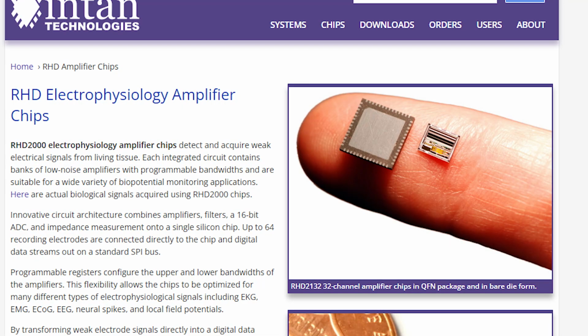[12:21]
Very shortly, I'm going to be repeating most of what you just saw by using rat neurons and a slightly different growth media to see if we can get neurons to grow properly. My plan is to get really good at growing neurons so that when we next try to grow them on the electrode arrays, we can be sure that at least that aspect of the project isn't an unknown, and we can be sure that if something is going wrong, it's probably on the electronic side.
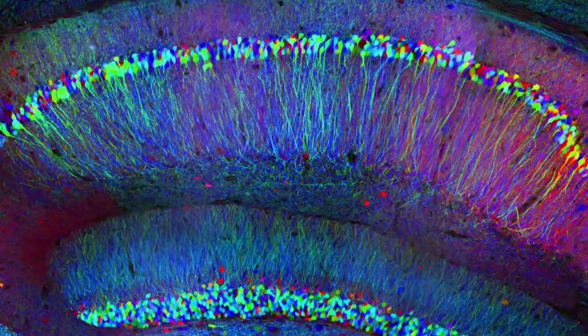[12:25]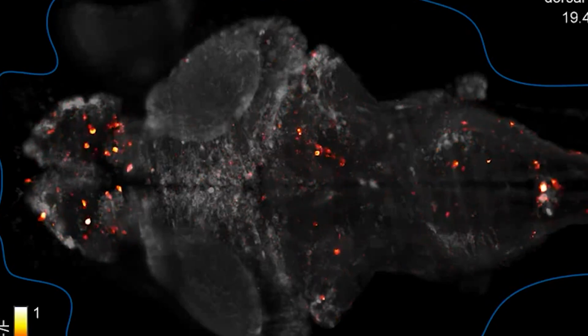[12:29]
And if we've already got neurons growing, I can show how the Brainbow construct works. Or we can modify them to express a calcium-sensitive fluorescent protein and literally see them thinking in the dish without even needing to connect electrodes. But that's all for upcoming videos.